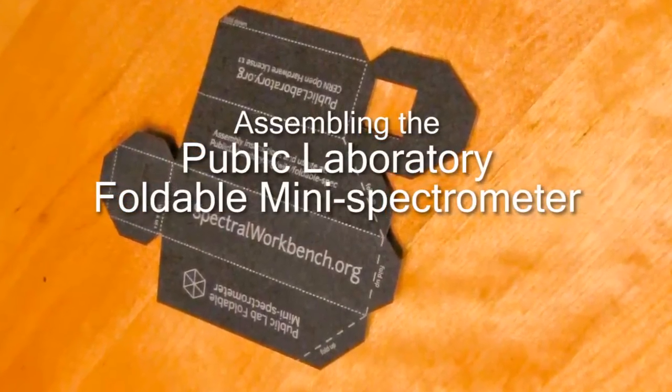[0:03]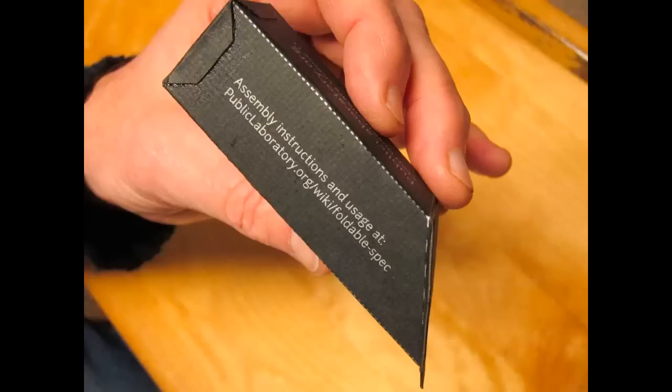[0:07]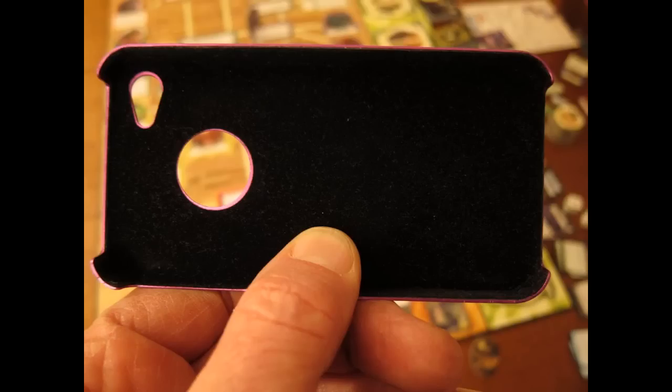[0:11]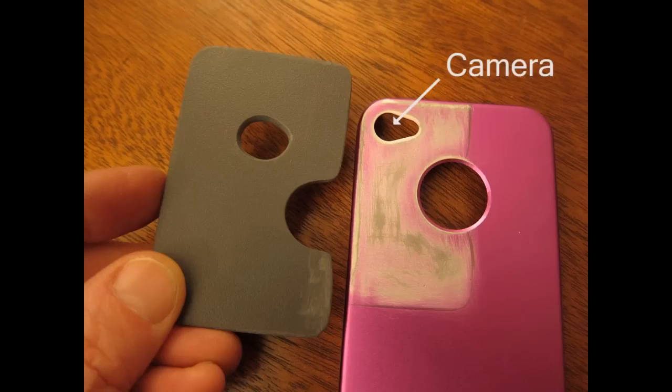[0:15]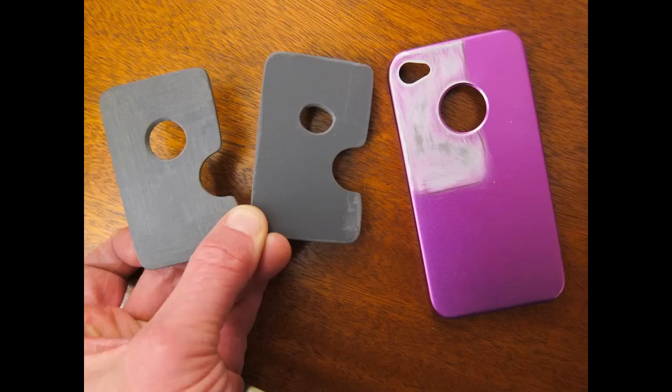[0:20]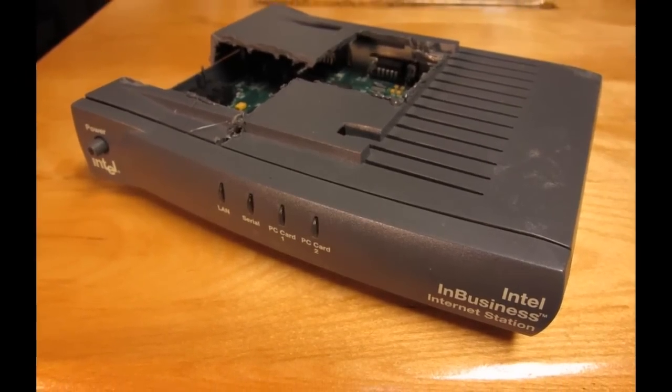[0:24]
I built two versions of the Public Laboratory's fold-up spectrometer for smartphones, and tried two slightly different ways of attaching them to iPhones. I bought a couple of these rigid aluminum iPhone cases for $4 apiece, and because the iPhone's camera is way in the corner of the phone, I made plastic plates to extend the surface for mounting the spectrometer. I borrowed the plastic for the plates from this Intel peripheral.
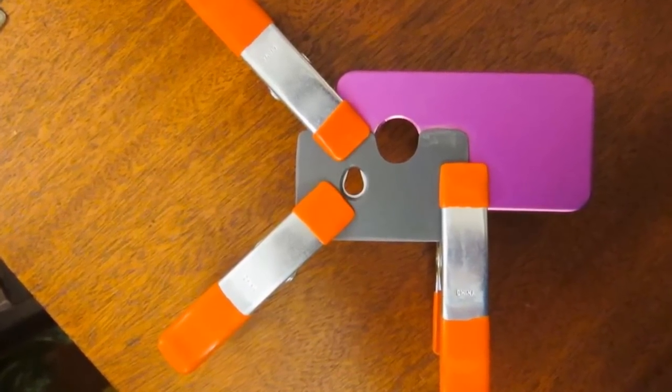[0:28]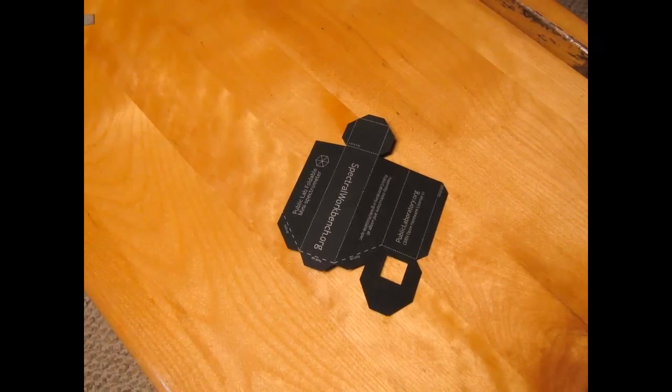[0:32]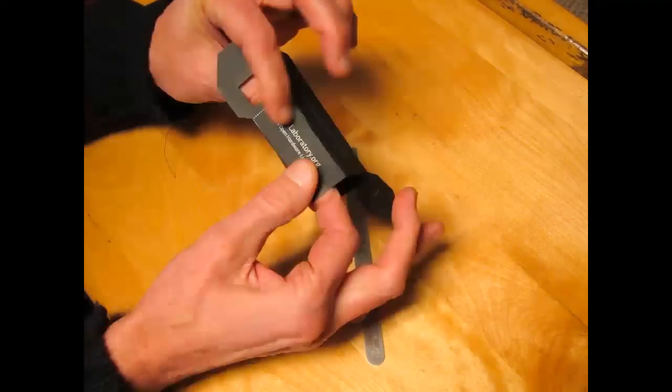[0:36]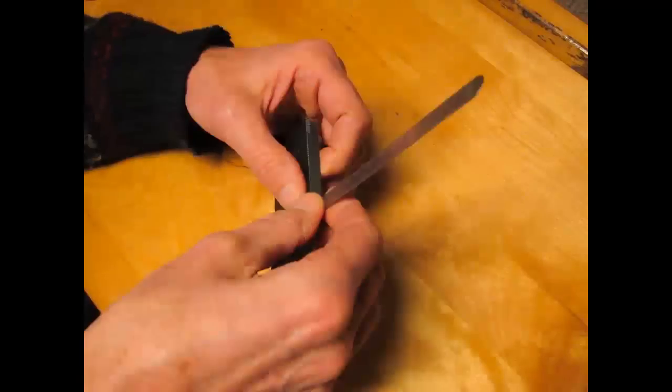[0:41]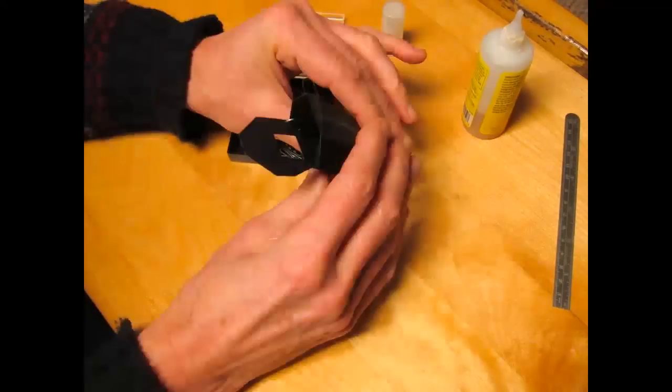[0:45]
One plate was epoxied to the camera case, and the spectrometer was attached to the other plate, an arrangement I thought would provide some flexibility. First, we have to fold up the spectrometer. I used a straight edge to make tidy folds, and used super glue because I had lots of it, and it dries really fast.
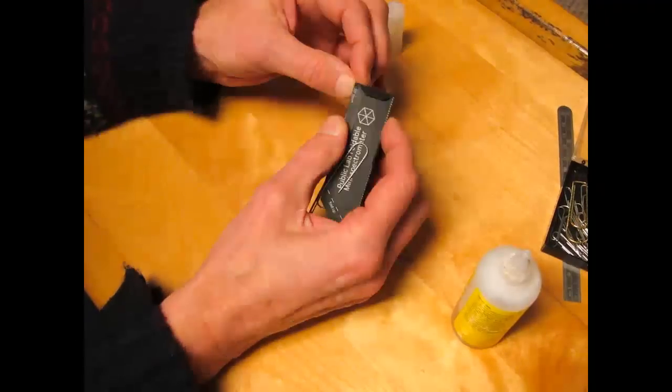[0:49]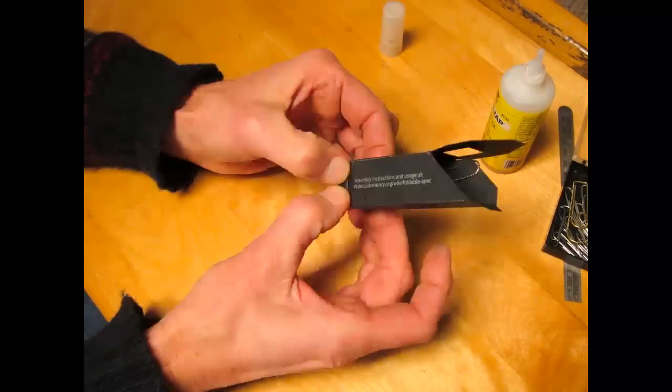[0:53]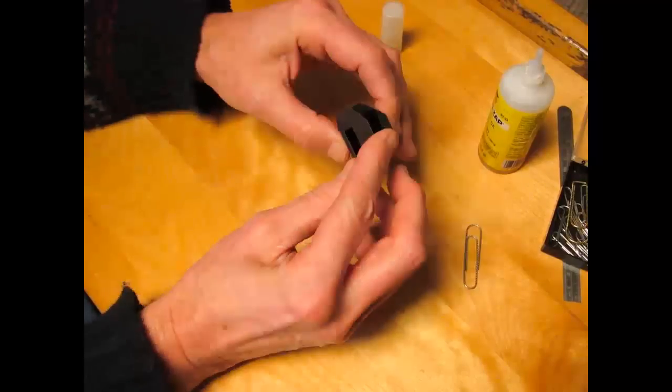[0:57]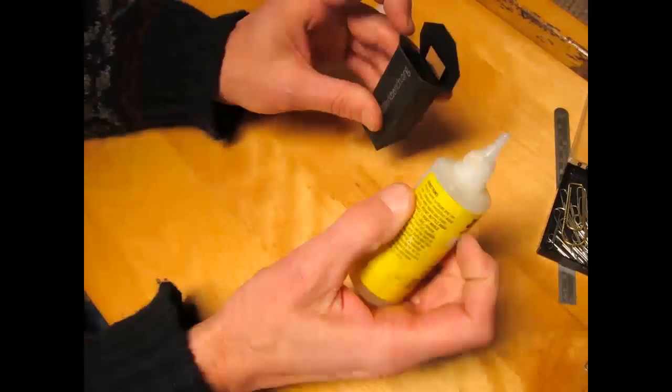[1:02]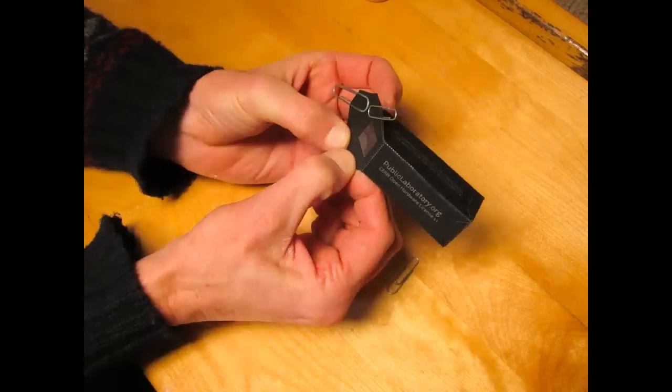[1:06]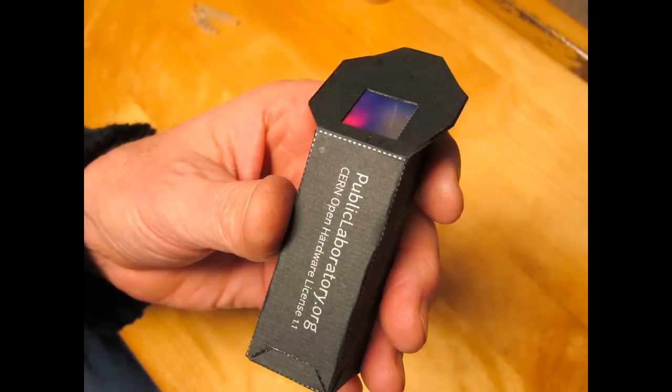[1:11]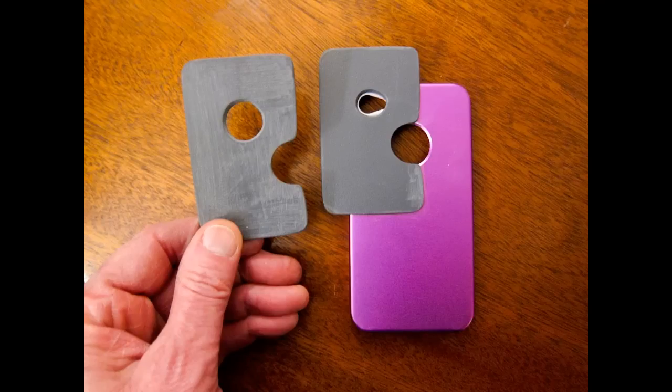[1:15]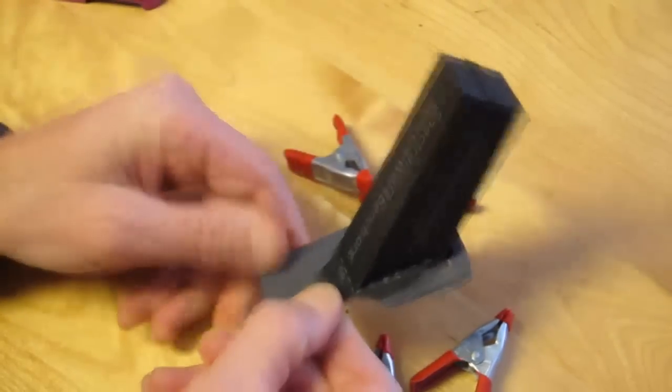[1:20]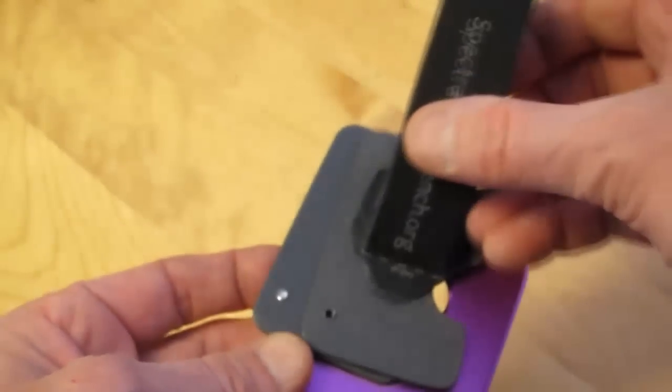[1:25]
Instead of using a piece of DVD for the diffraction grating, I used grating replica polyacetate film with 1,000 lines per millimeter. I glued this on the inside of the flap, but then realized that this makes it inaccessible. In this form, it could be attached right to the phone or phone case, but I ripped out the grating and instead glued a piece directly to the plate. The paper spectrometer was then glued to the other plate. And this plate was attached with two screws, which are self-threaded into the plastic, so no nuts are needed.
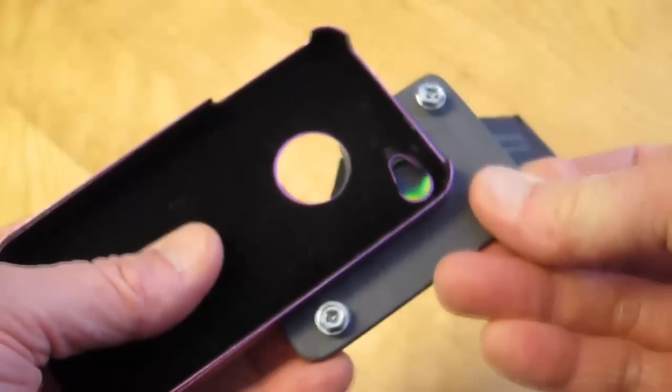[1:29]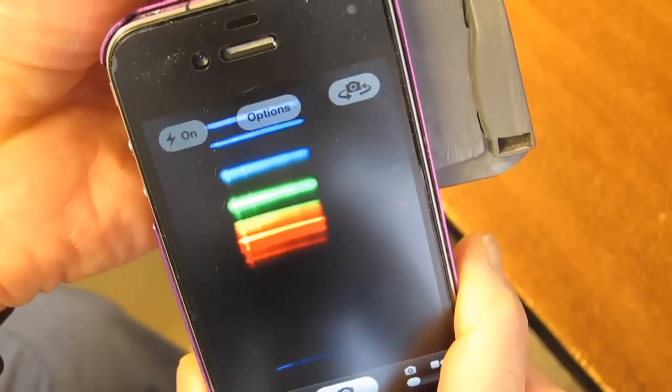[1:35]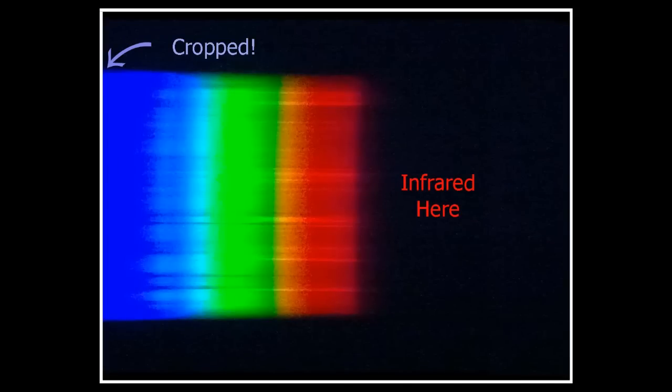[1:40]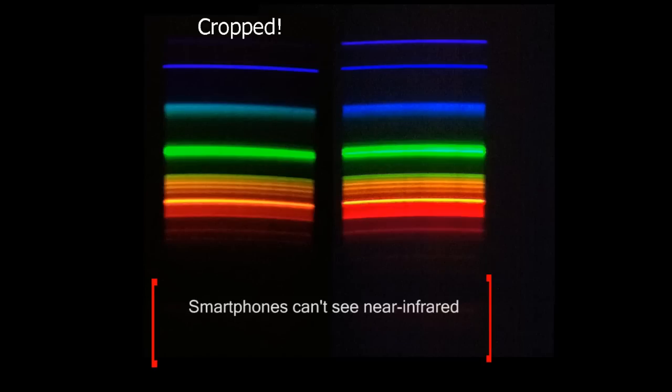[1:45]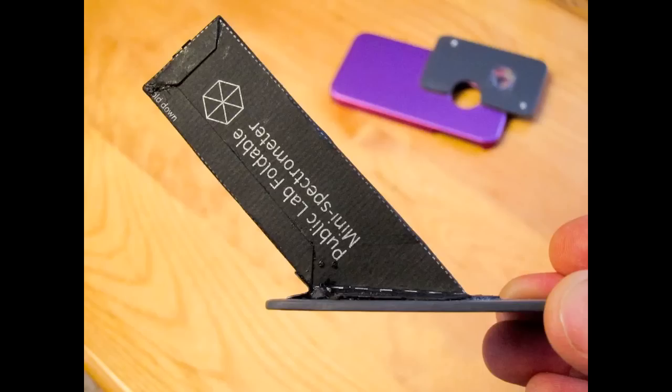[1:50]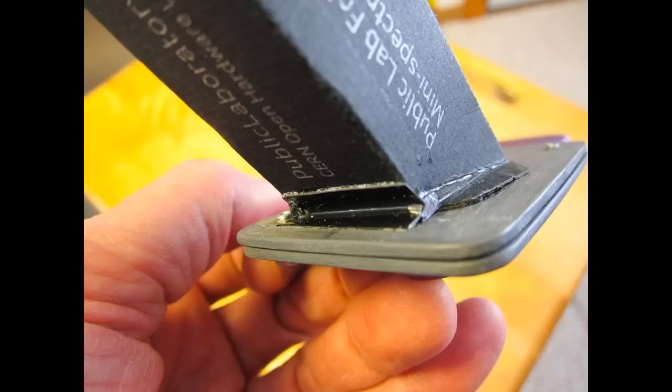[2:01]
Unfortunately, the angle of the paper spectrometer is not quite right for the grating film I used, and the image of the spectrum was displayed too far toward the blue end. This would be a good position for the image if infrared light was also being recorded, but cameras don't record infrared unless you remove the internal IR filter, which most people are not going to do with their smartphones. So I had to refold the base of the paper spectrometer to increase the angle from 45 degrees to 48 degrees to center the visible spectrum in the photographic image. This left a gap, which I covered up with a piece of black plastic.
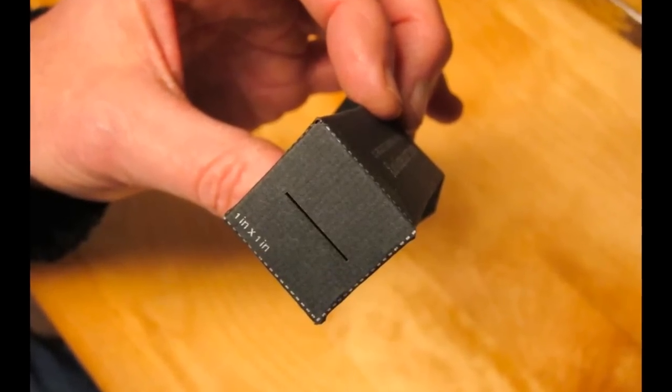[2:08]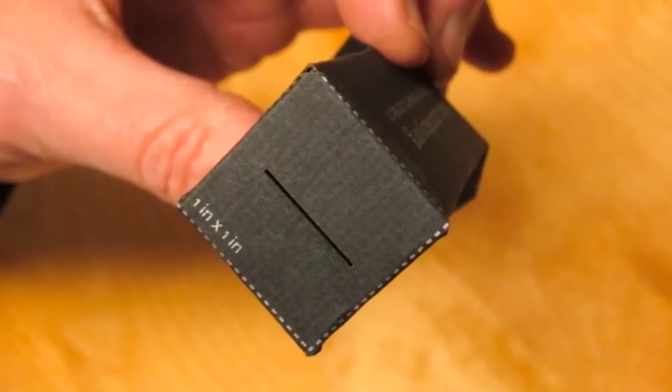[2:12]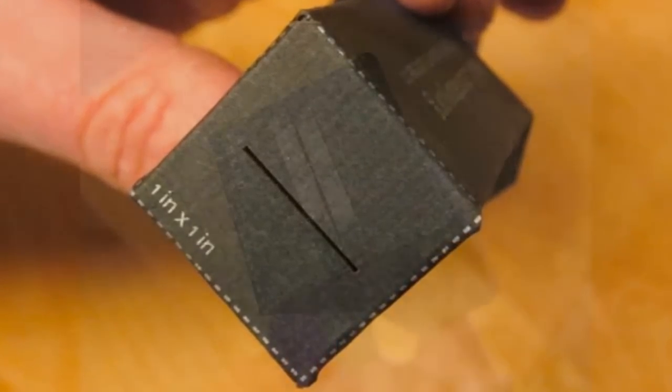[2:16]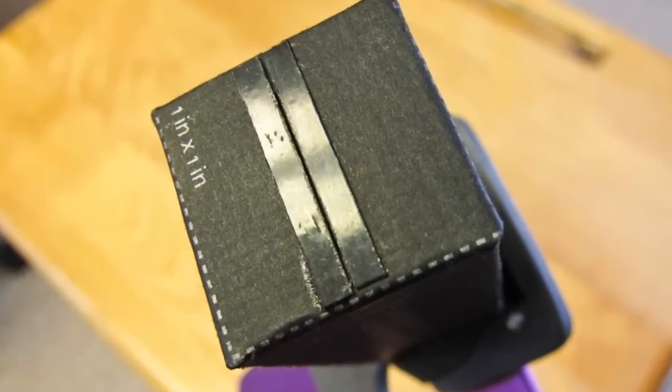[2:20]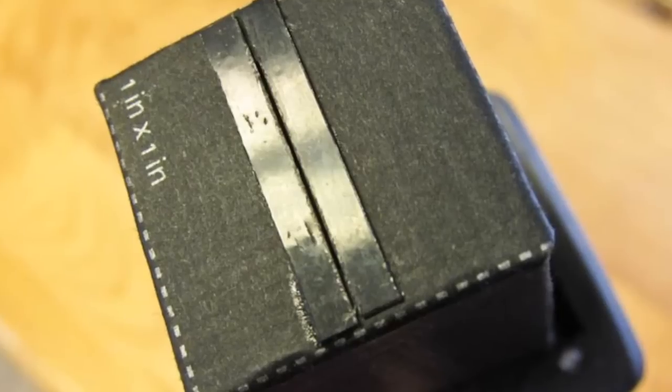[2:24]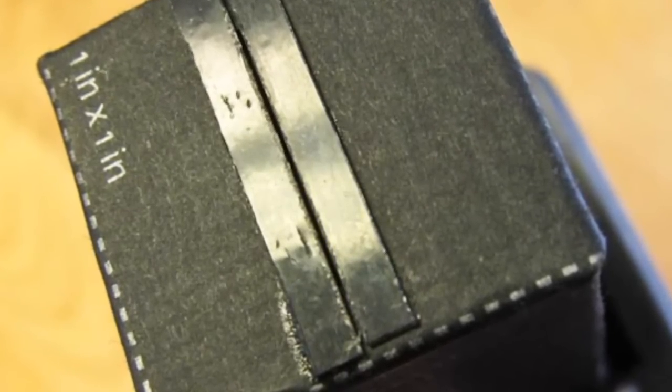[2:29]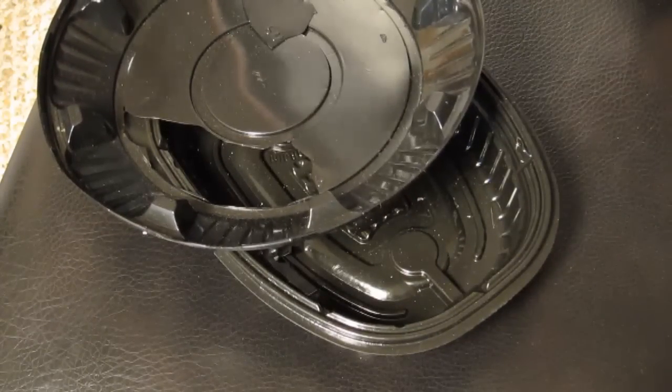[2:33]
Another modification I did was to make the entrance slit narrower. The standard slit works fine, but as long as the light source is bright enough, a narrower slit can resolve spectral peaks better, and I wanted to find out how much difference this made. To reduce the width of the slit by about half to around 0.2 millimeter, I glued two strips of black plastic along the existing slit. This plastic is the thin black stuff that many prepared food containers are made of.
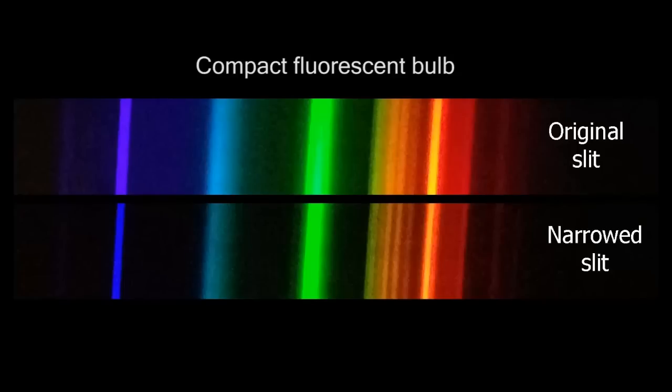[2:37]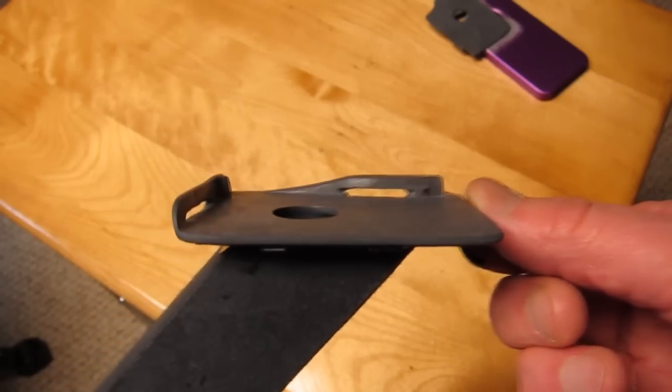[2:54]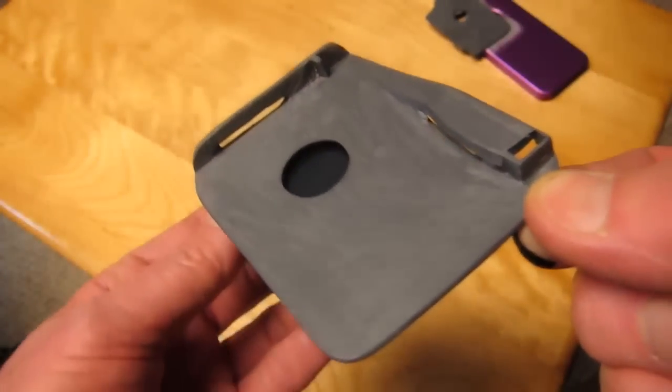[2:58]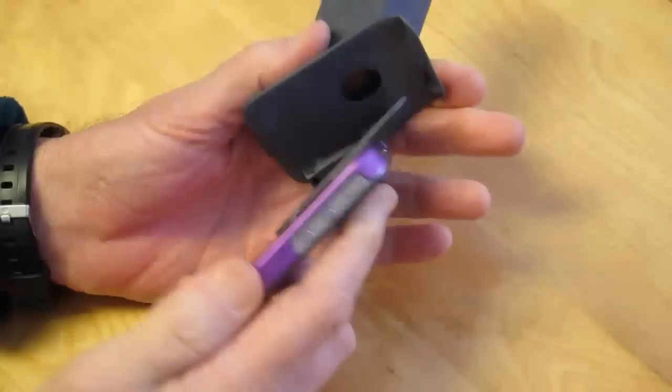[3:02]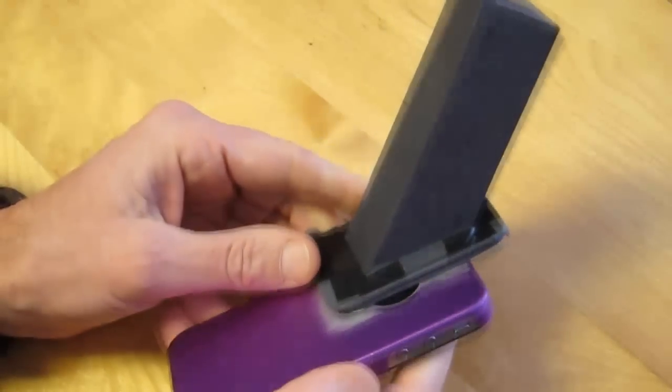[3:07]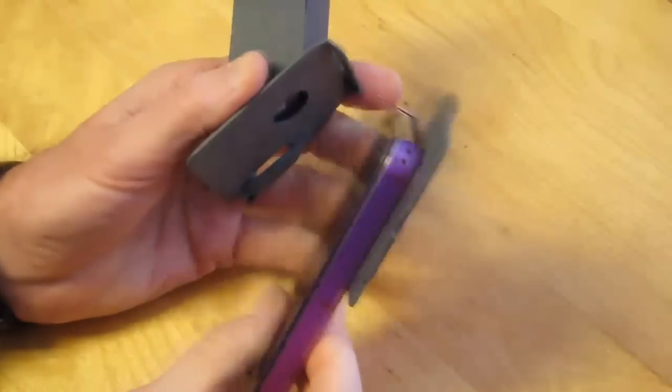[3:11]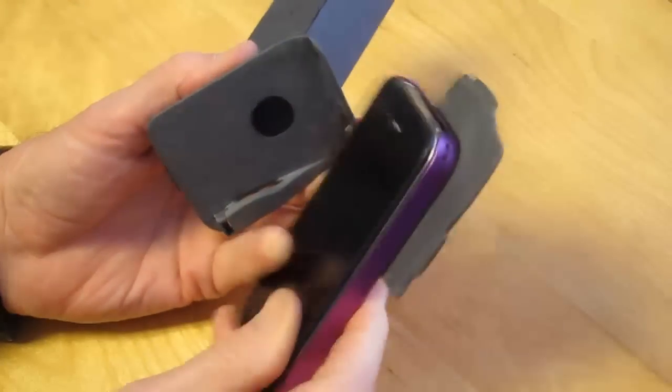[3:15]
The other spectrometer I made was a homemade version folded from black construction paper. I cut one of the plastic plates from a corner of the Intel peripheral, which allowed me to cut slots along two edges. I then carved tabs in the other plate so the spectrometer could be easily clicked into place. Because the grating is on the spectrometer plate, I thought this would make it simple and quick to use the camera normally in the middle of a spectrometry session.
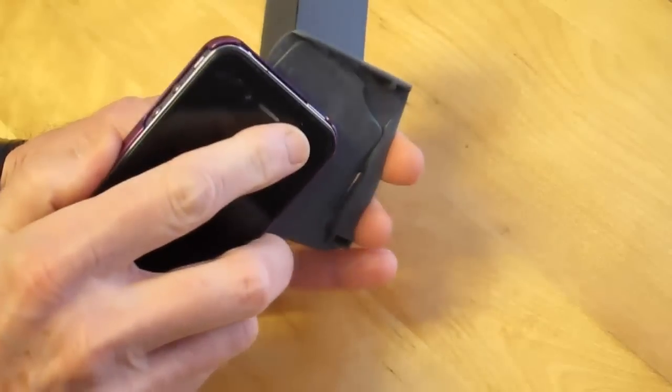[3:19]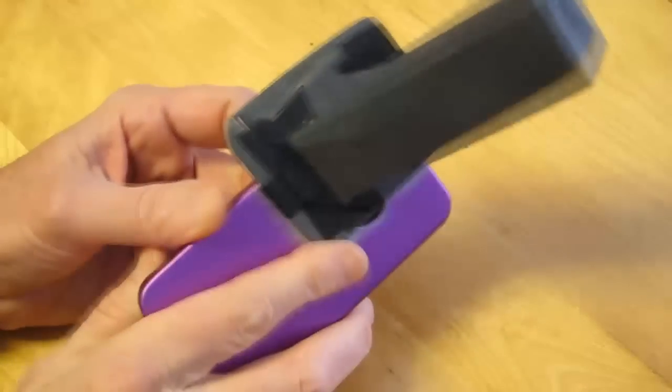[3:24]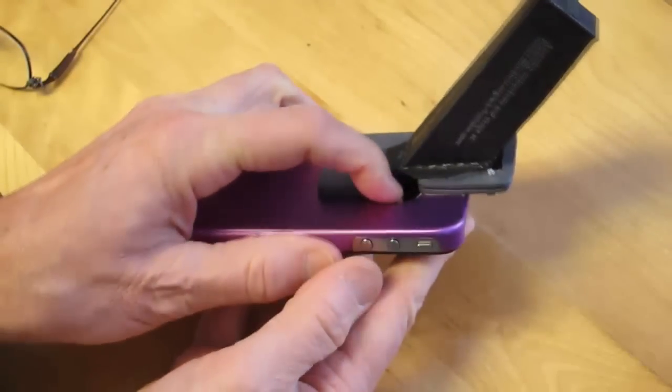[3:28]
This turned out to be a solution without a problem, since the phone can be quickly removed from the case. And the other version of the double plate, with the hole over the Apple logo, allows the phone to be pushed out easily. So this is the simpler, more useful design.